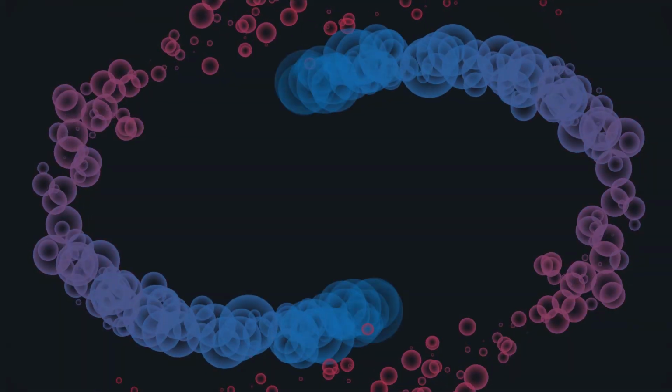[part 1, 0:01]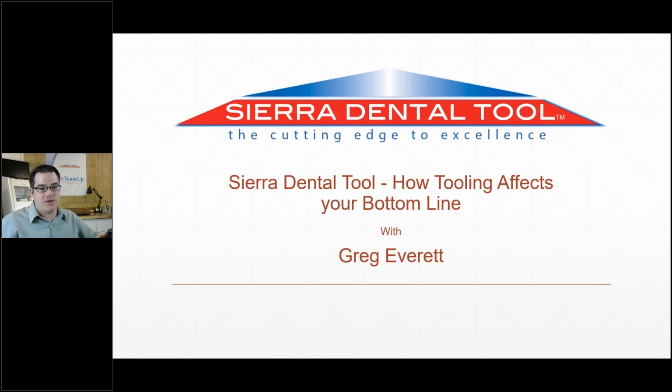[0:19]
My background is actually in the lab. I've got a lot of experience with a lot of different milling machines and CAD/CAM workflow in general. I like to tell people that I've had the chance to break a lot of things and learn the hard way. So I'm in a pretty unique position to speak about how tooling and CAD/CAM are related.
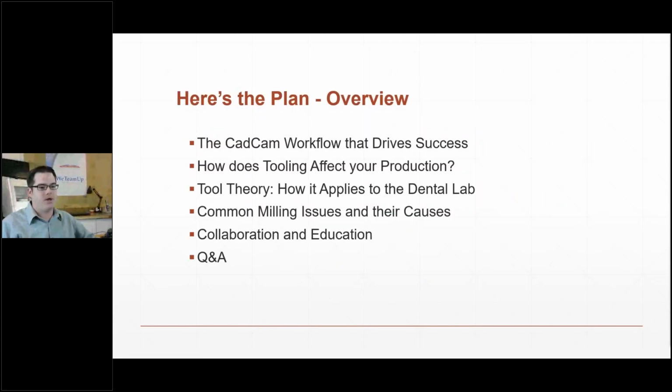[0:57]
So we'll just jump into it. I'm going to talk for maybe 40-ish minutes. I'm going to touch a little bit on how to think about CAD/CAM as a broad view, and then we'll dive deeper into tooling as more of a detailed look. And then finally, I'll look at some of the common milling issues that come up in CAD/CAM and how to look at them and determine what the issue may or may not be. And then we'll do a little bit of overview on what Sierra Dental Tool is doing in the industry. And we'll drive it home with a little bit of Q&A if there's anybody with questions at the end.
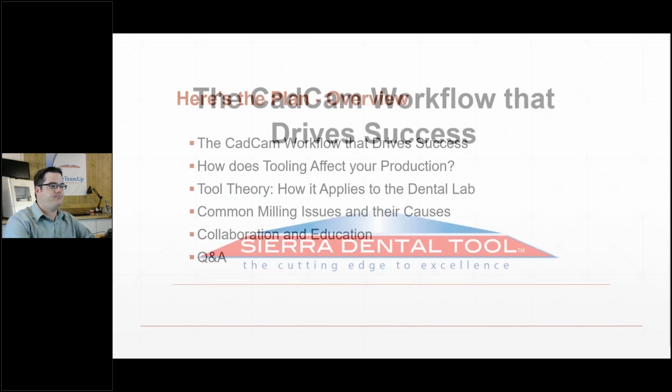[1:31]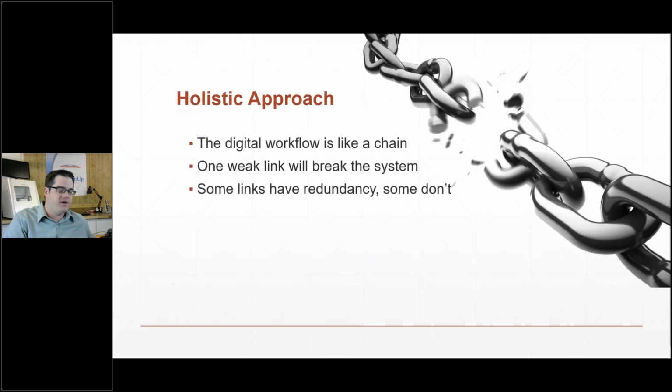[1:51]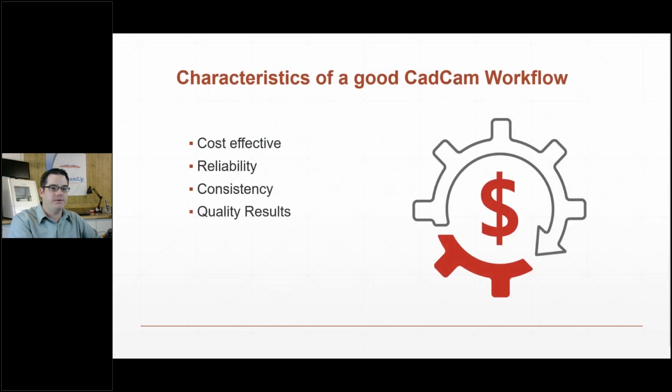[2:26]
So when we're talking about CAD/CAM, that's a broad term now. It basically means anything that's digital in nature, and most labs now have some sort of digital aspect to their production. And what I find is that a lot of times people tend to focus in on one point of the system, and you really should think about your CAD/CAM, your department or your process as one entity. It's an aggregate of several different pieces that all come together to make an efficient workflow. So the best comparison is to visualize it like a chain. One link breaks and you can have issues. So going forward,
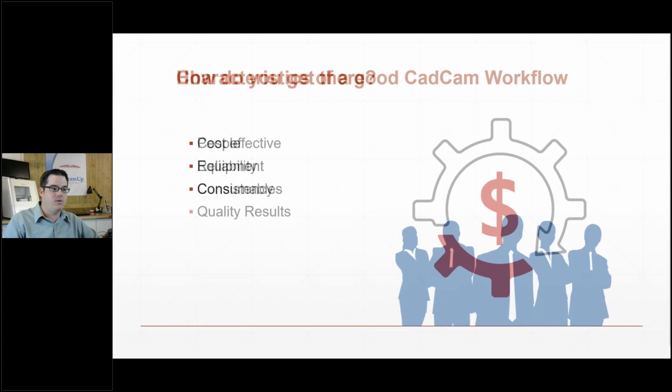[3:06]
what does a good CAD/CAM workflow look like? First of all, as much as it's fun to make crowns, we want to make money at it. So it's got to work for your application. A lab that's making hundreds of crowns a day is going to need different stuff than a lab making 10 crowns a day. So it's important to think about all that. And then you want it to be reliable. You don't want to be spending a lot of time on the phone with support, and you want consistent, quality results coming out.
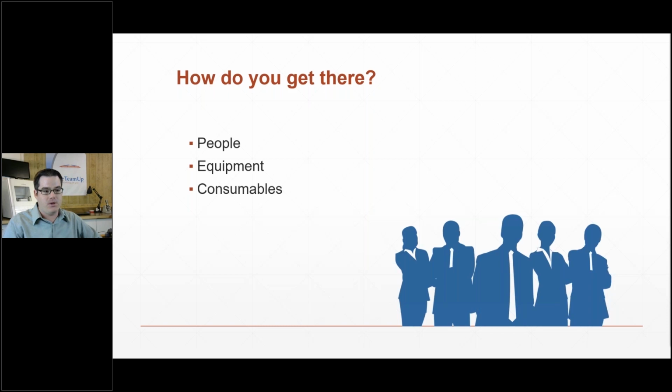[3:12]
So the key part of a successful CAD/CAM workflow is, first off, people and relationships, both internal inside the lab, employees, coworkers. Get good people who really want to put the biggest effort into the production, and then also externally. Choose your suppliers and build those relationships, because when the day comes that you do have an issue with your CAD/CAM, something breaks, a scanner breaks or whatever, which is inevitable, those relationships really come in handy. And then choose quality equipment. Ask around, ask your friends what they are using, and make sure you're using good, reliable, consistent consumables. That's material, that's tooling, obviously, all of the above.
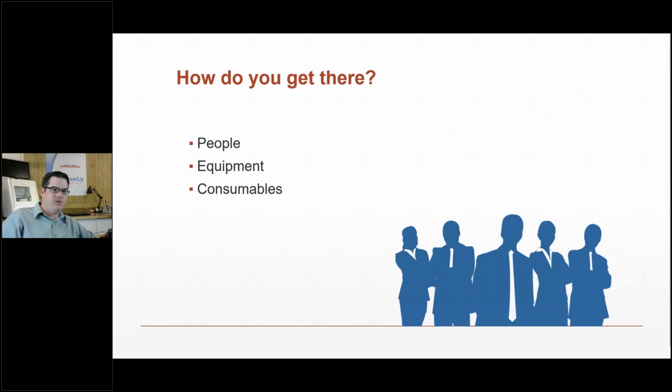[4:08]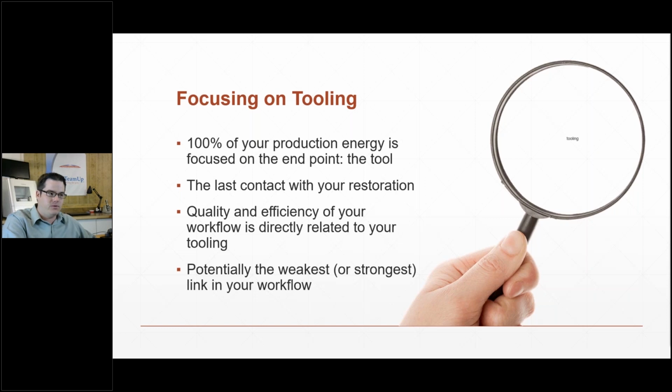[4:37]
So focusing in a little bit deeper on tooling, when we look at CAD/CAM and think about it like a chain, the tool is the end link of that chain. Everything's focused on it. All the way from your initial scanning, designing, nesting, it all culminates at that tool. And so if you do skimp on that when you're making selections, it can certainly give you bad results. It's the last thing that's in contact with your restoration before you actually get to put your touches on it. So it's potentially the strongest link in your system or the weakest link. And we like to encourage people to make it the strongest link.
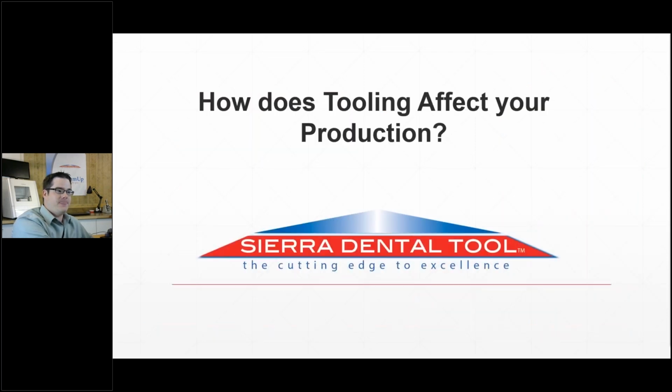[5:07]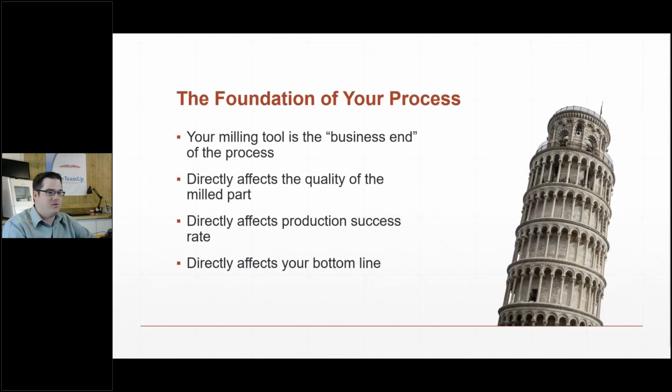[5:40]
Like I mentioned, often tooling gets overlooked as part of the production chain. A burr is not a burr. There are a lot of differences in burrs from manufacturer to manufacturer, and we take into account all of the detailed nuances that have to do with dental, and make sure that the product we're putting out there is a high quality product. So I like to think of the tool as literally the business end of your lab. Everything's focused on it again. It directly affects the quality of your units, and thereby also affects your bottom line at the end of the day. So I'll give you a little more detail on that.
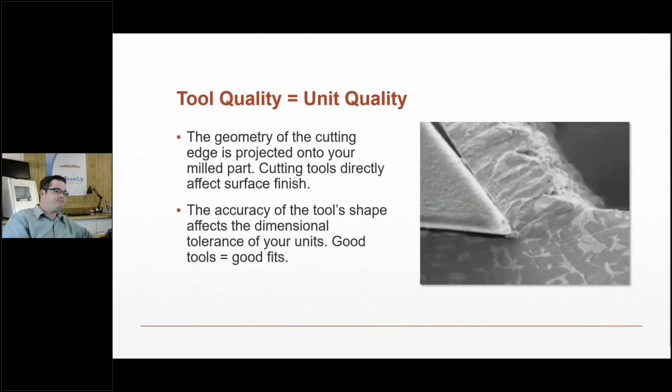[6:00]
So when a tool is cutting, and this is actually a cool GIF of a cutting edge cleaving material.
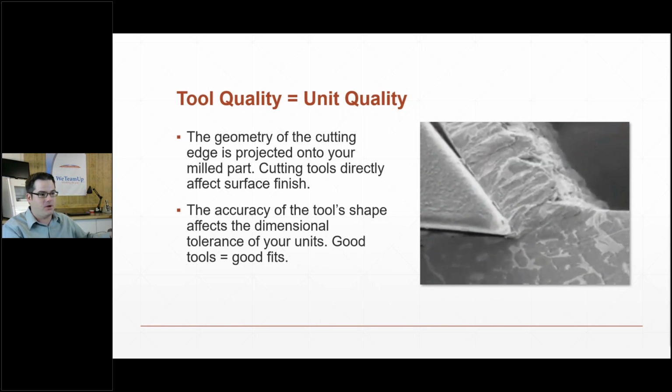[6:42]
This is actually aluminum, I believe, but the idea is the same in ceramic zirconia. The geometry and the shape and the tolerances that your tools are manufactured to, they imprint themselves right onto your part. So for instance, if your tool is a little bit oversized, then you can end up with loose fits. Or if it's undersized, you can end up with tight fits. And so it's important to know that you're choosing a supplier that not only puts out an accurate tool, but also puts out a product that's consistent.
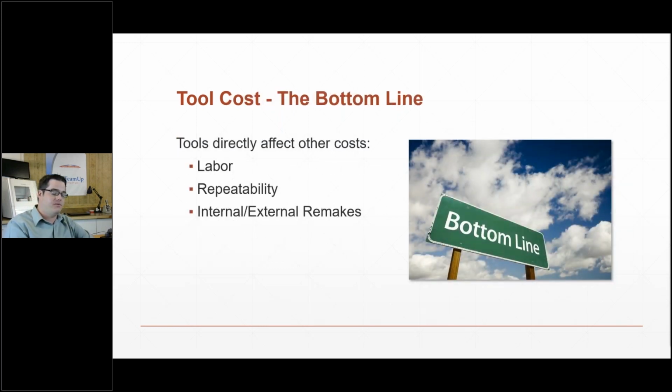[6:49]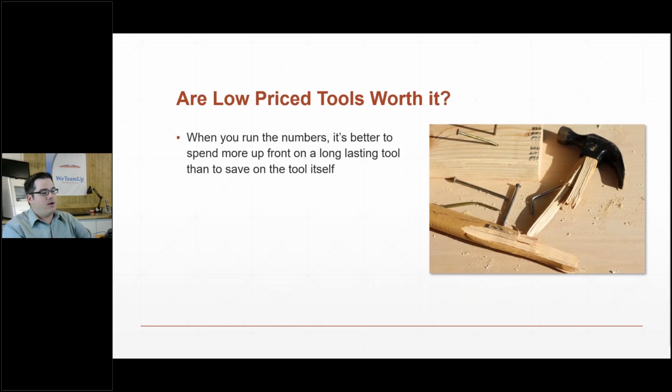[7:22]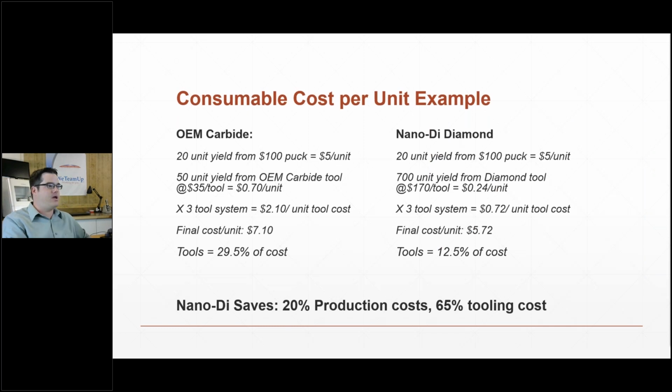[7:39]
And then the biggest thing we're concerned about in the lab, obviously, is cost. So this is a little breakdown on how tooling kind of works into your cost per unit. Not only does the actual tool cost come into play, but it also affects your labor rates and repeatability in the form of your remake rates, which is a very important metric in the lab, as we all know. So it's important to think about the quality of the tool and ask, is it worth it to pay less for a lesser tool? And I've got a little bit of a breakdown here
that we're looking at. And on the left, I've got a 20 unit yield out of a $100 puck, which, amazing, you can get a $100 puck nowadays, but they're out there. And you can see at the end that the tool with a 50 unit yield is a very significant portion of the cost at around 30%. Now, when you get into our Nano-Di, yes, it's a higher initial investment, but the drastically greater yield per tool that you get breaks down to a much less expensive milling cost. So you can see even with a $100 puck, we go from $7 to $5.70 on your cost per unit, which is really significant in terms of your business case.
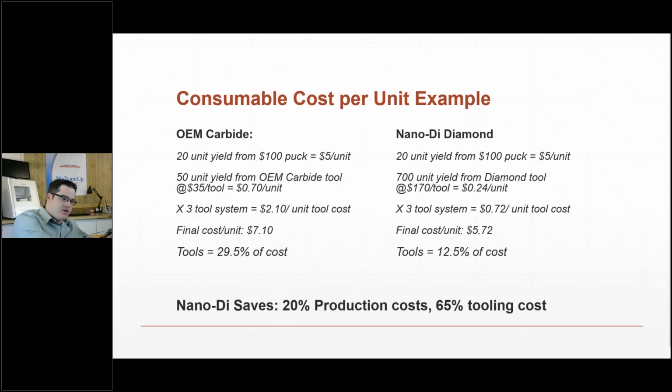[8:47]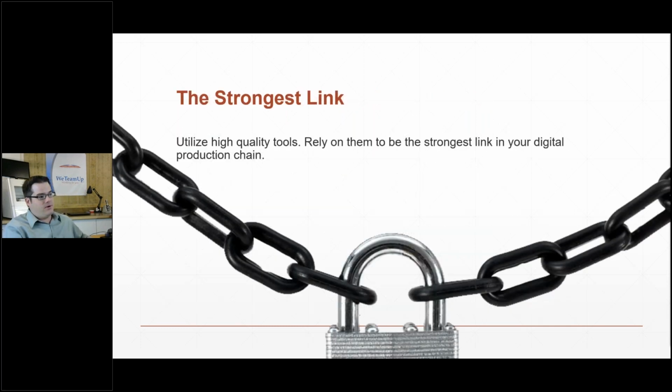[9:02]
And then if you want to look at it just at tooling, it's even more significant. But I like to throw the material in there so you can kind of equate that to a real life situation. So back to my chain metaphor. If you use high quality tools, they're going to be your friend. They're going to be the strongest link in your digital production chain. So moving on here,
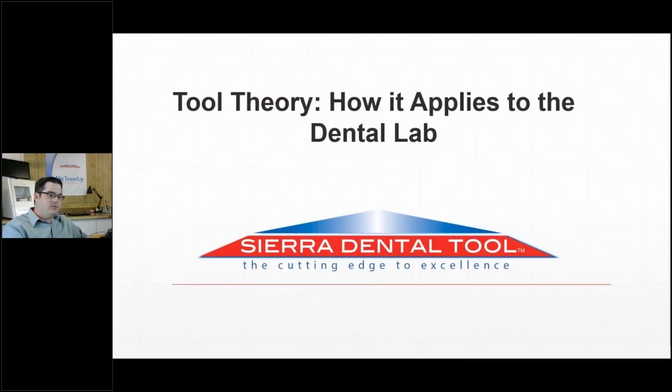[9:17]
as I'm sure everybody knows, we're not the only industry using a CAD/CAM system. In fact, dental is a very, very small niche in the whole scope of things. So the vast majority of CAD/CAM process is used on the industrial side. So that's automotive, aerospace, that sort of thing. Now a lot of the principles port over to dental, and so that's what I'm going to get into now.
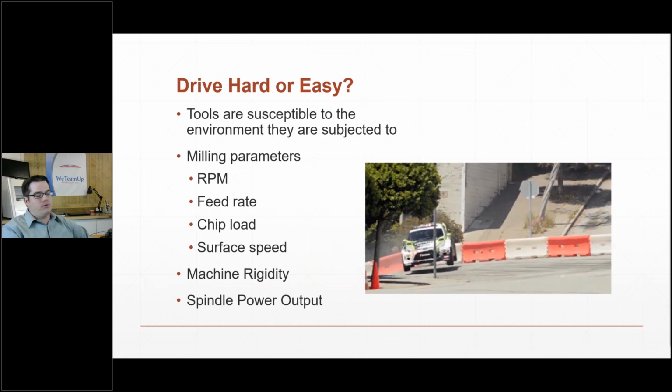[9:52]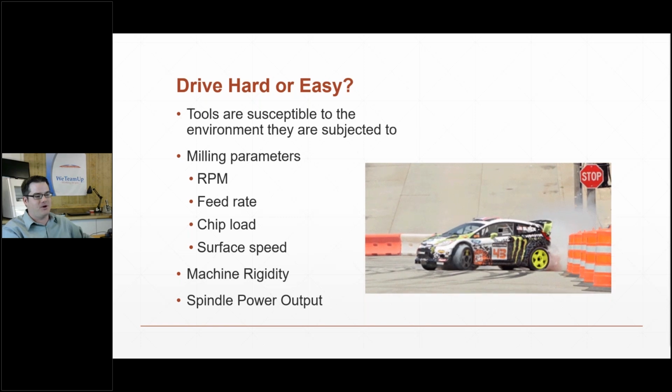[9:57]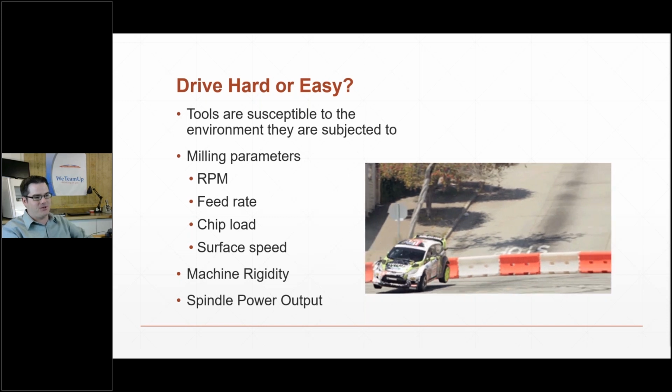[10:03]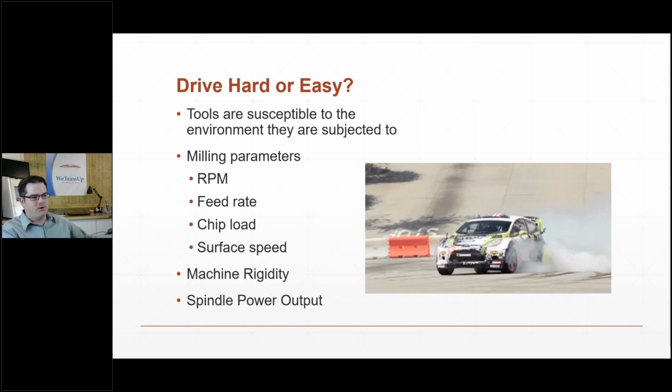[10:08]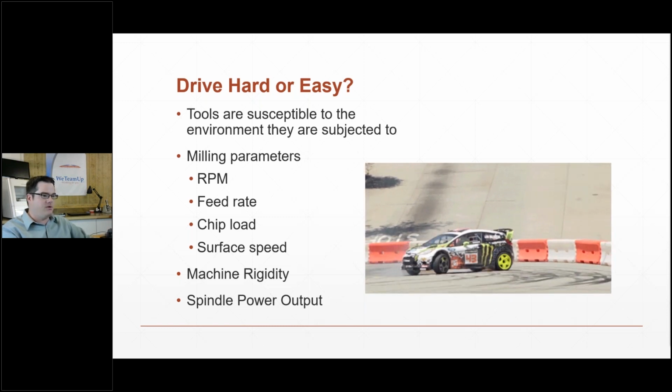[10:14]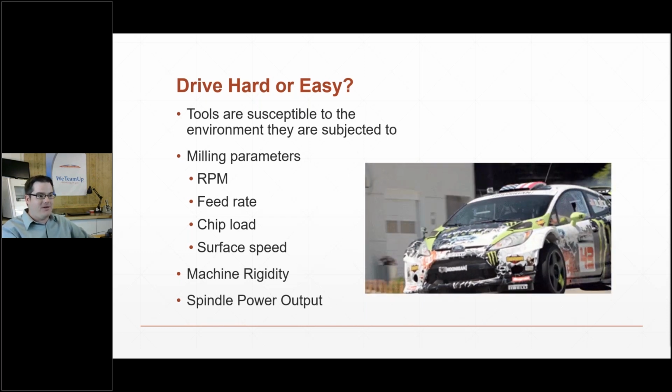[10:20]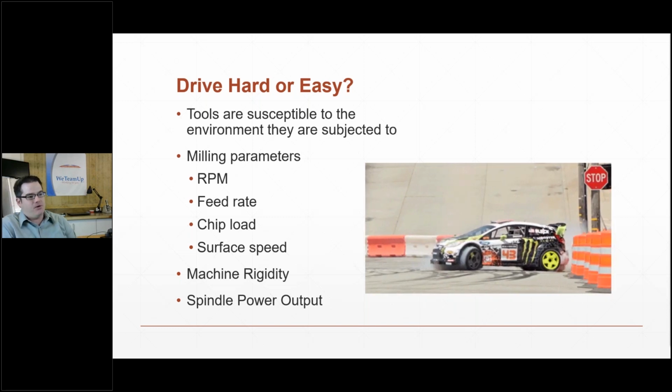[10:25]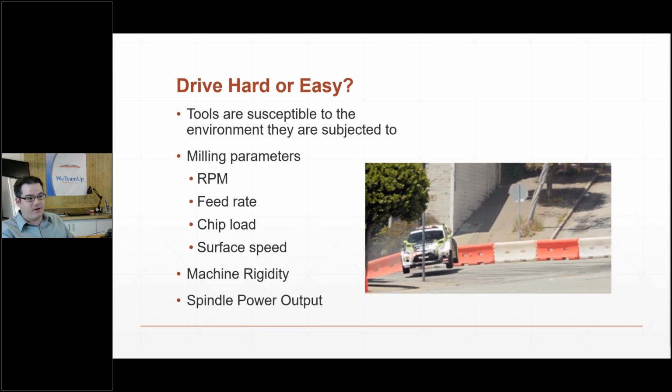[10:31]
So this is kind of an interesting little GIF. It's Ken Block, rally driver, doing one of the Gymkhanas. If you want a little distraction, Google Gymkhana. It's kind of fun. So tools are very similar to tires. If you think about tires, I'm going to buy a nice $80,000 Porsche and then put Walmart tires on it. No, you're not going to do that. The point being is that even the best tires, if you drive it like this, or if you abuse them, they're not going to last.
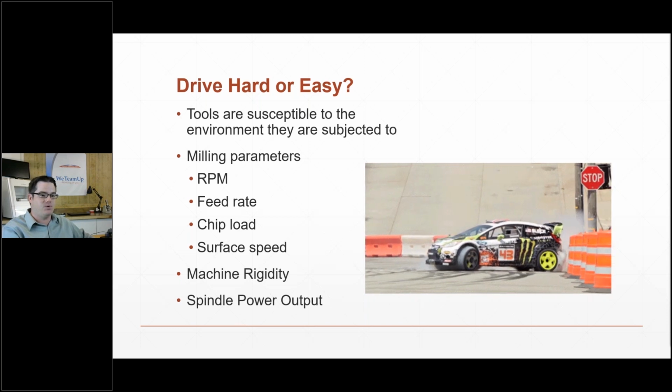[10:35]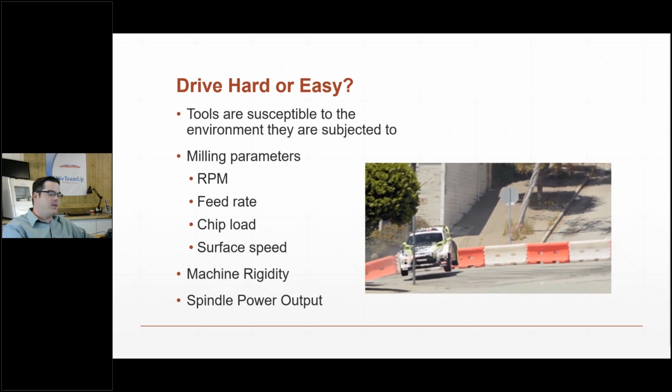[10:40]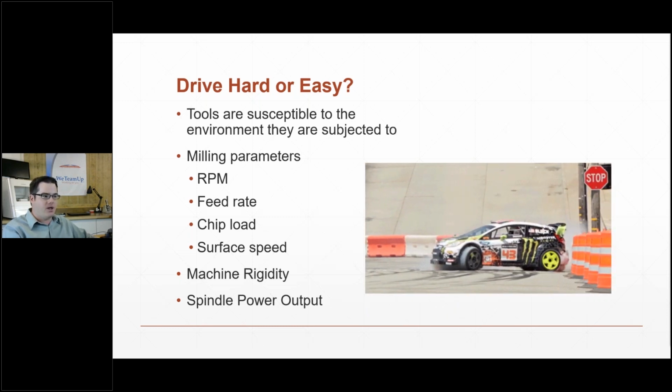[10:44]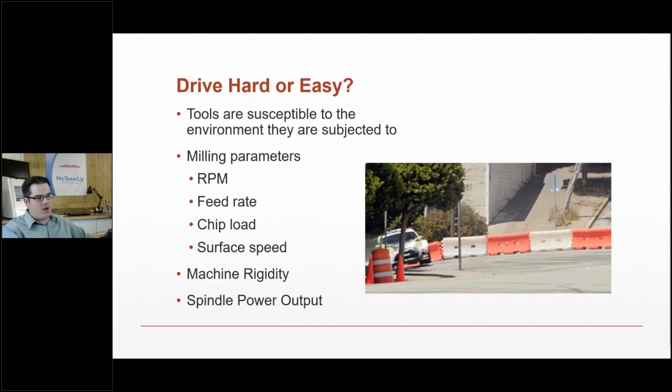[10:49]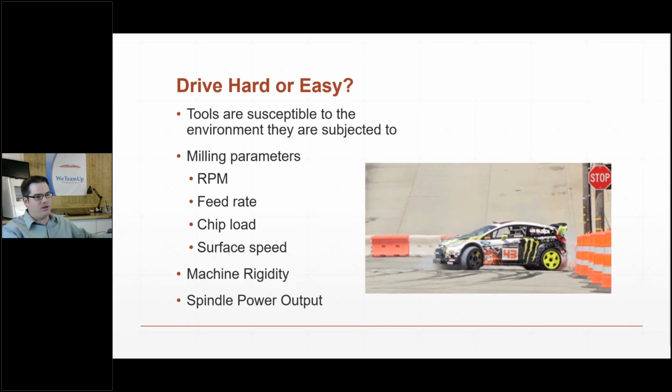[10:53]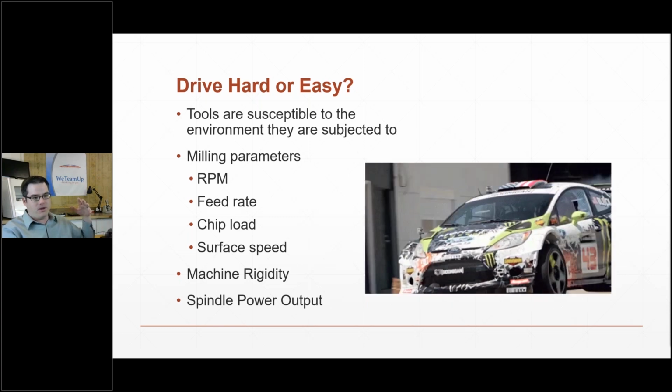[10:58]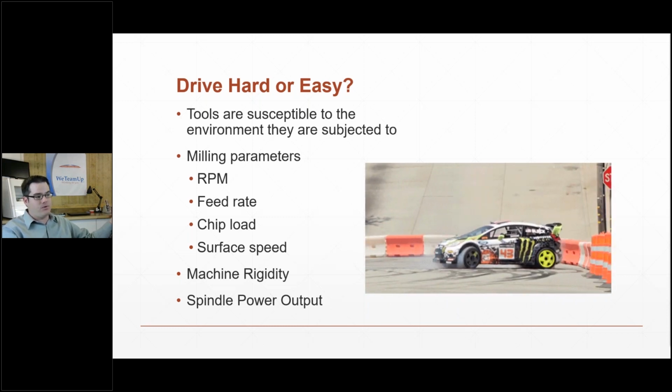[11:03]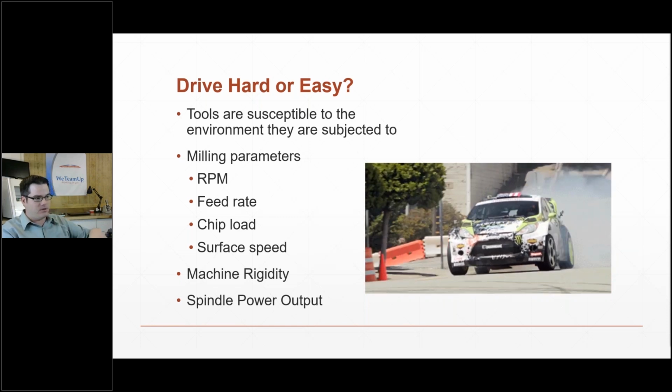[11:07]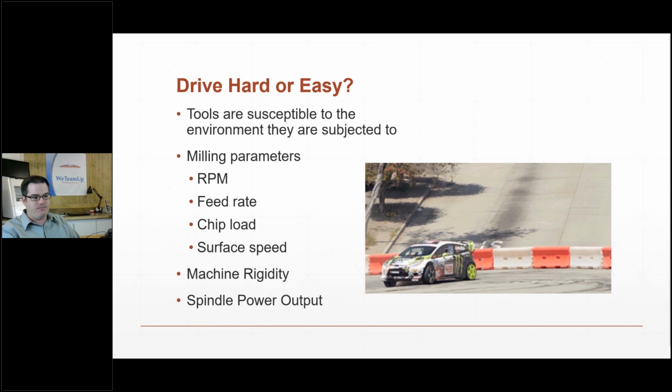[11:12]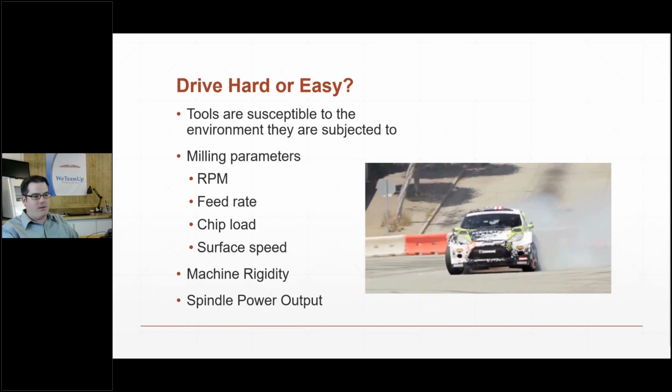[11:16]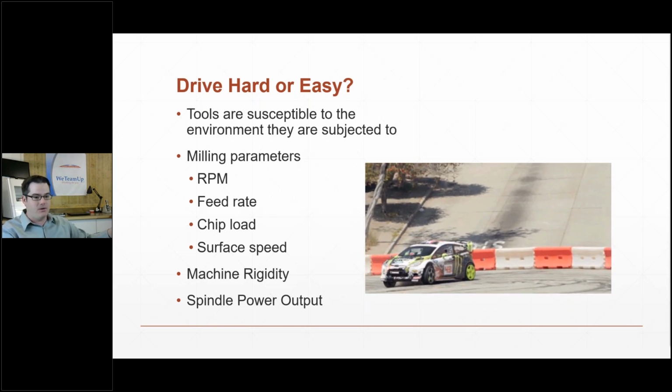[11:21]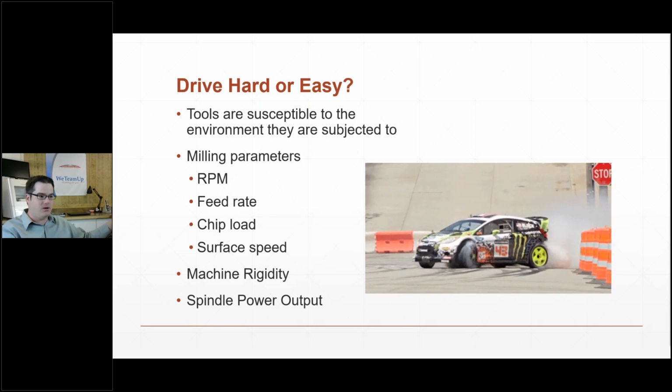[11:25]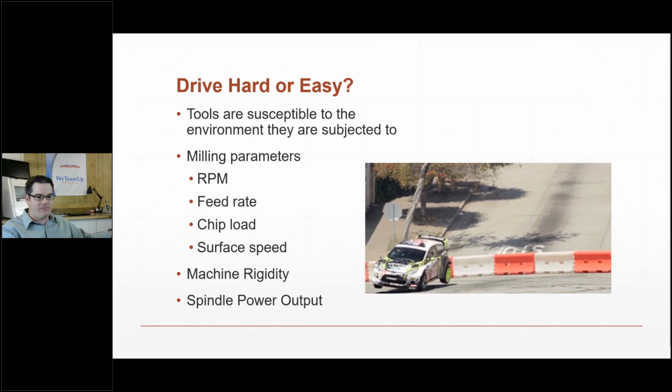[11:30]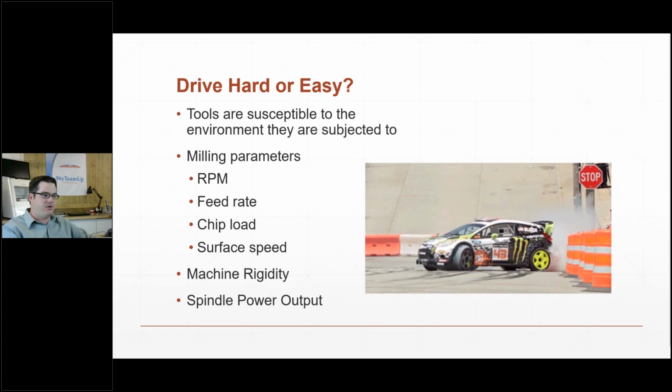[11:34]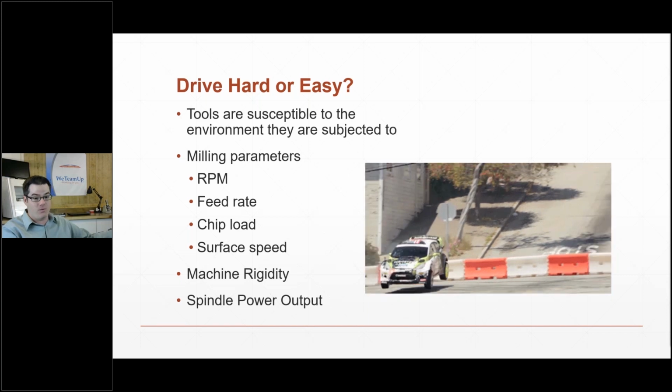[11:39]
So there are several different things that affect tooling and how long they last in situ. And the biggest thing is the milling parameters: RPM, feed rate, chip load, and surface speed. RPM is the rate that it's spinning at. Your feed rate is the speed that the tool is moving through the material horizontally, and those two are combined to determine a chip load, which is the thickness of the piece of material that's cut per revolution. And all of these come together and they affect the entire milling dynamic. If you change one, you change the other, and certain materials, certain machines, they all have their own little sweet spots. So if they're overdone or underdone, it can drastically affect tool life one way or the other.
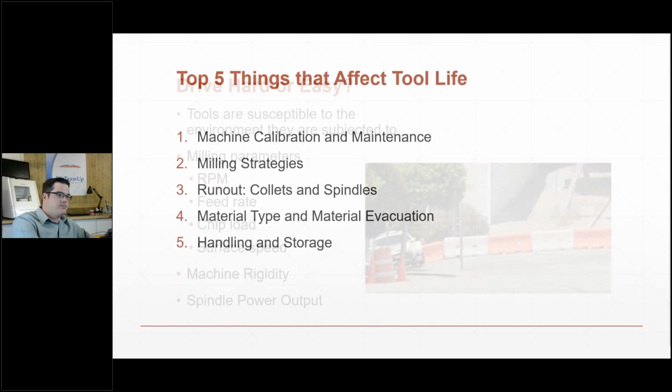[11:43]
Okay, a little bit more detail. Unfortunately, the milling strategy controls a lot of those parameters. The only thing I can say about that is don't mess with that stuff. Messing with milling strategies is not really recommended unless you have a really good grasp on what's going on. So, top 5 things that affect tool life, and there are others, but I don't want to bore you guys to death.
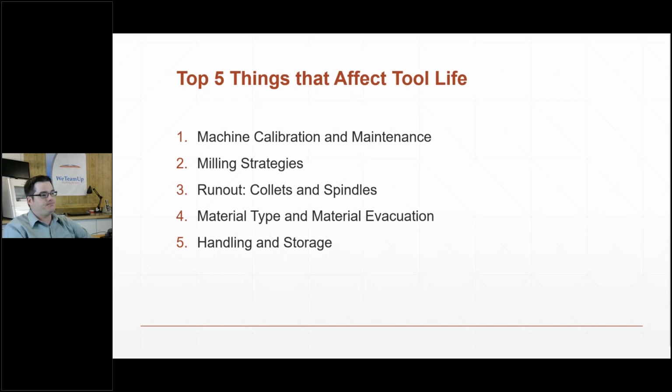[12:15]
First is going to be your machine calibration and maintenance. So no matter what machine you're running, definitely calibrate it. Always keep up with the recommended maintenance schedule. It's easy to forget about that stuff because we're trying to get units out the door, and if the machine's dusty or something, who cares, right? But it's a huge investment for the lab, so definitely if you don't have a system in place, have some sort of standard operating procedure for calibration and maintenance.
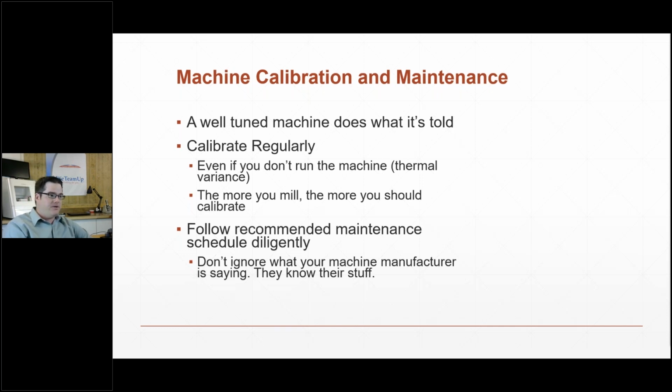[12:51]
A little word on calibration: rule of thumb is the more units you make, the more you need to calibrate. And then also you want to be aware of the ambient temperature swing in your lab. A 10-degree Fahrenheit temperature swing can change the shape of your machine enough to throw a calibration off. So if you're not very precisely temperature controlled, then I'd recommend a daily, like morning calibration.
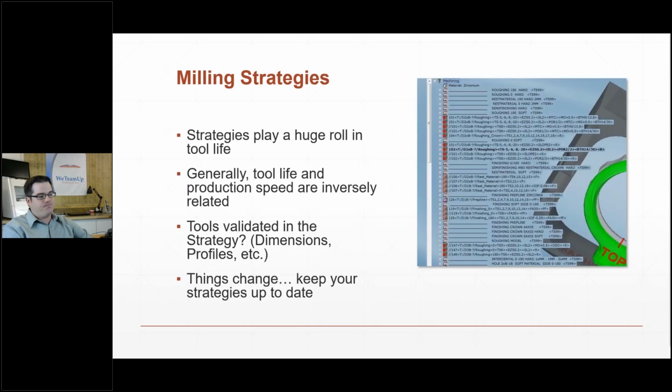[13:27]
A little bit more on milling strategies. The milling strategy is what controls all those other parameters that I was talking about. And as an end user, you don't have a whole lot of control over it, but that's where it comes back down to who you partner with as far as support goes, because different companies look at this differently, and you want to make sure you're getting something that's validated with the tooling, with the machine, and the material that you're using.
And then the last point on strategies is, don't neglect your updates, because they're constantly putting out new strategies, things they're improving, milling times, efficiencies. It's important to keep up on that. So a lot of the CAM softwares have like an annual fee. It's usually pretty negligible, and in our opinion, it's certainly worth it.
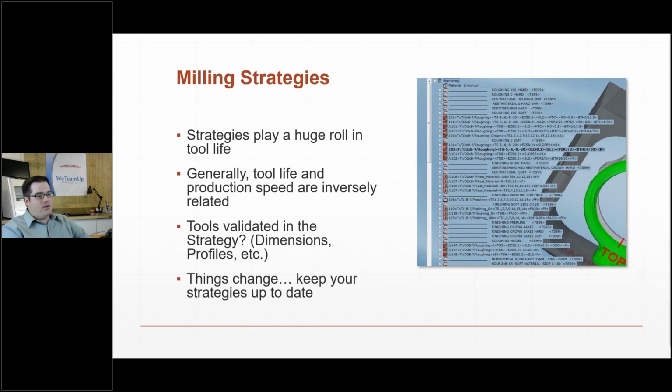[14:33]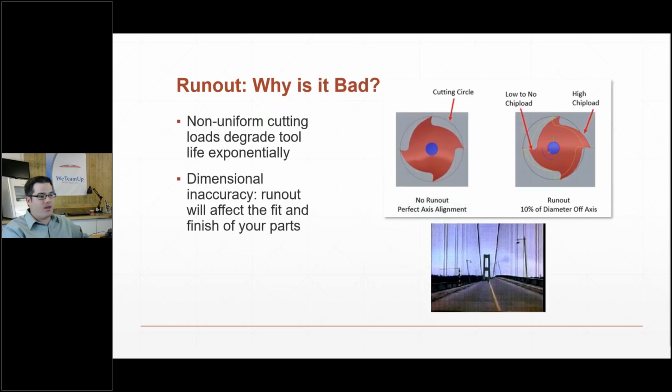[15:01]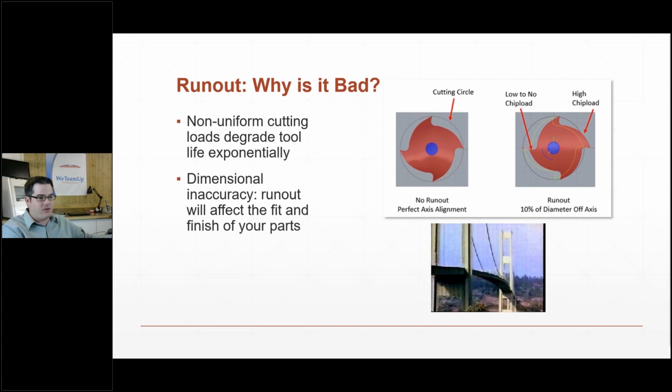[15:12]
So here's another one that we kind of have a little bit of control over in the lab, and that's runout. If you imagine a tool spinning, that tool must spin in alignment with the spindle's axis. And any deviation from that alignment is called runout. So if there's any vibration or wobble in the tool, what you get is a differentially loaded cutting dynamic. So one flute is doing more work than the other. And an imbalance in any system is bad.
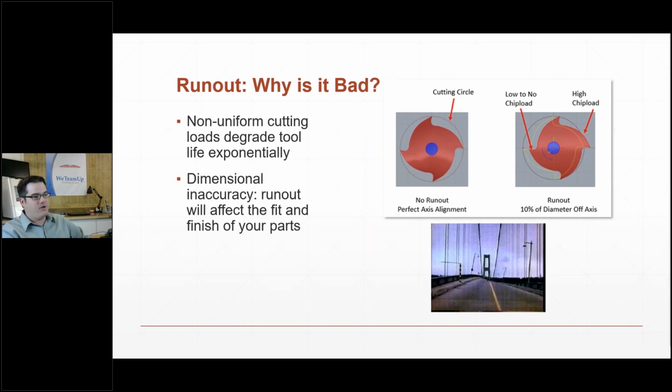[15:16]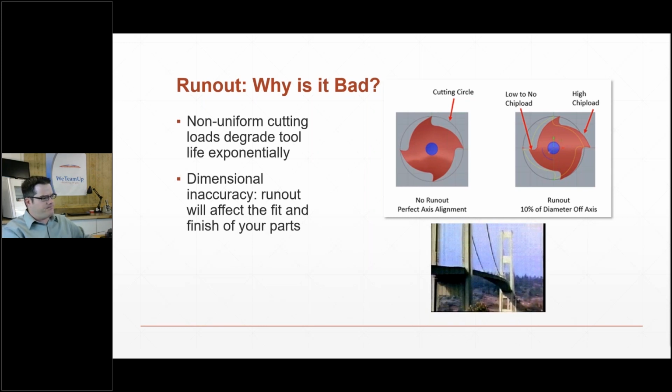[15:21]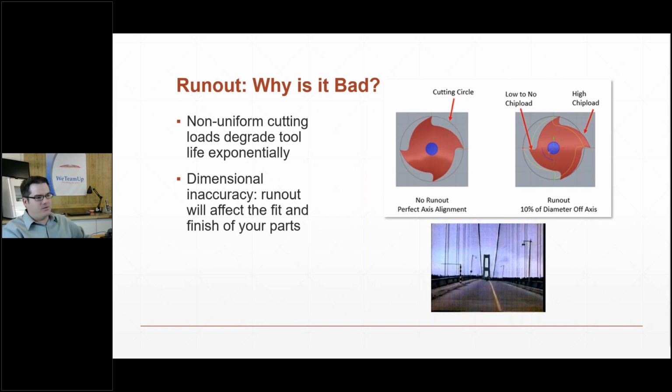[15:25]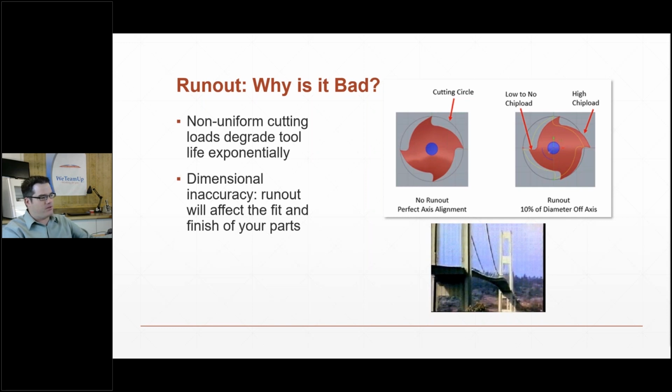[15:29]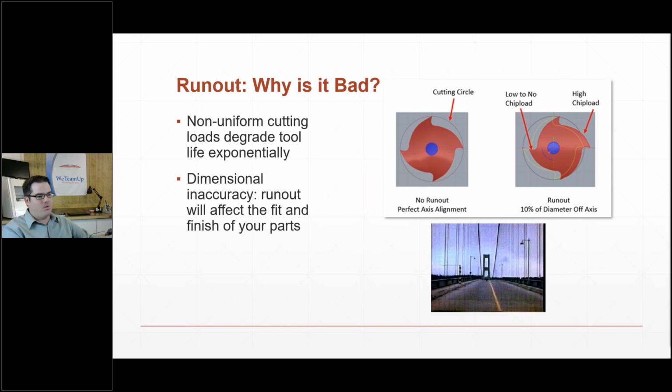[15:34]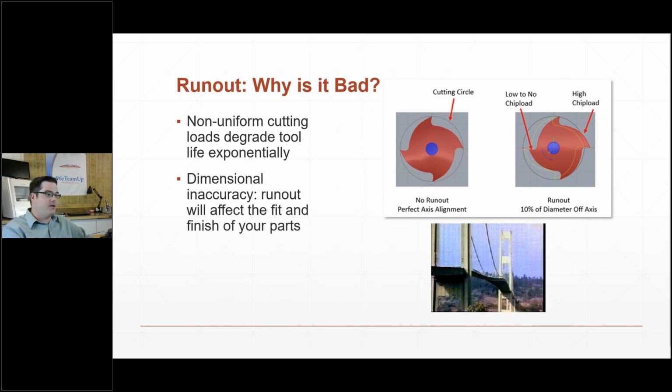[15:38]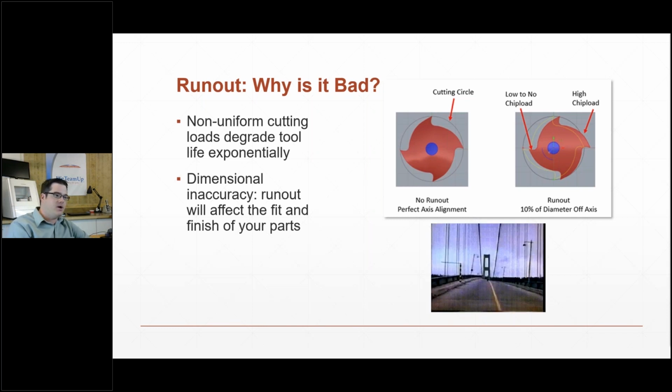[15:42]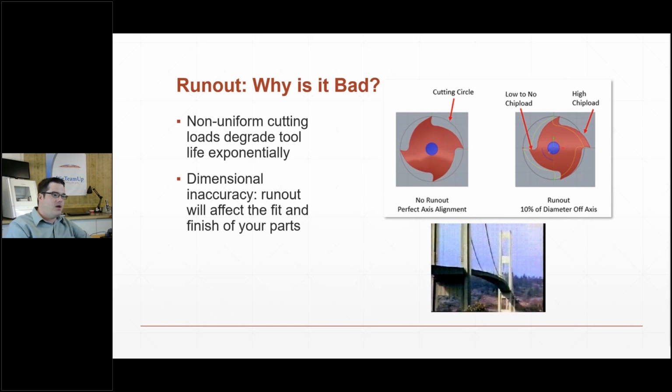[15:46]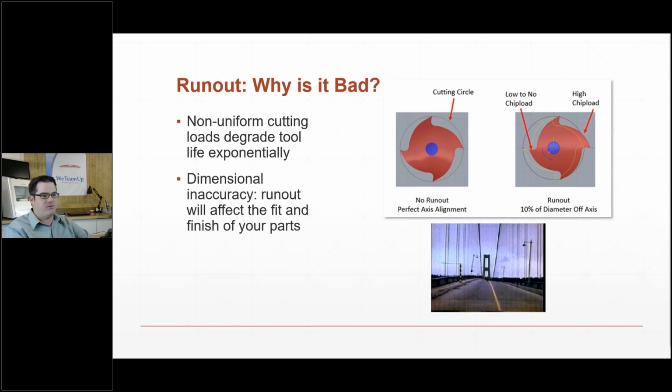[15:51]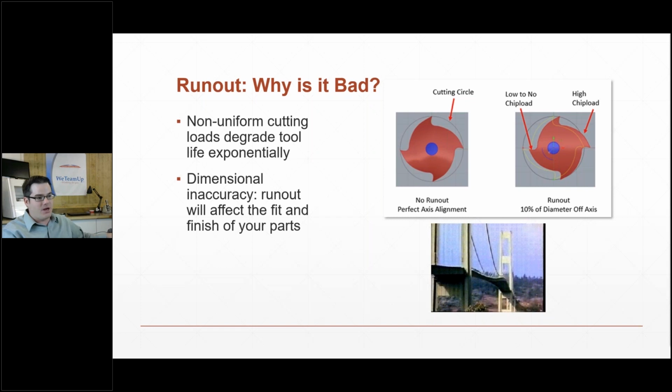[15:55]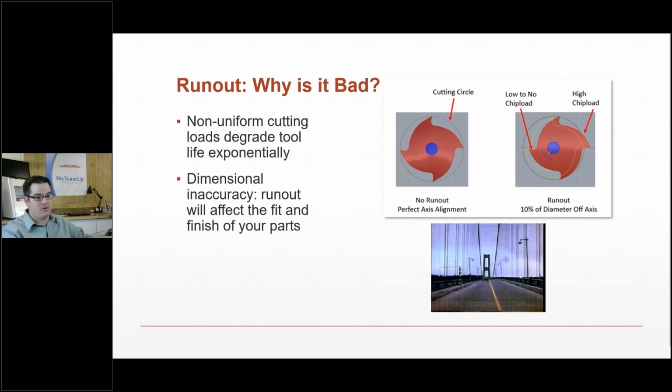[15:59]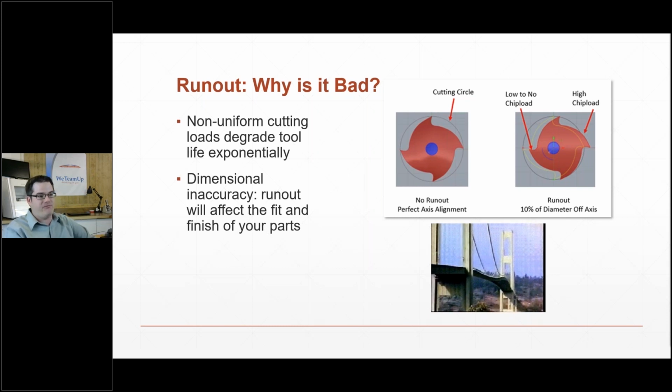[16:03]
A really good example of that is this little GIF here. This is the Tacoma Narrows Bridge that was built, I think, in the late 40s, and they didn't take into account the wind load. And so what happened is that when it got windy, this thing started to resonate and it collapsed. So differential loading in any sort of mechanical system is bad, especially in tooling. And so here's what we get here. You get a non-uniform cutting load, like I said, and if you do have a severe amount of runout, like say that it's moving 50 microns, then your tool's actually going to cut a path that's 100 microns larger than the tool because it's wobbly. So then you can get dimensional inaccuracy and fit issues.
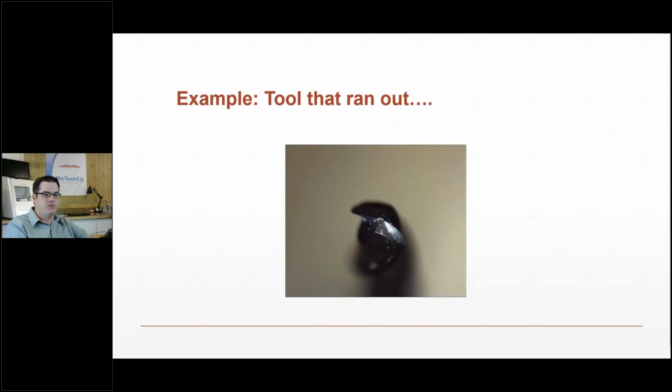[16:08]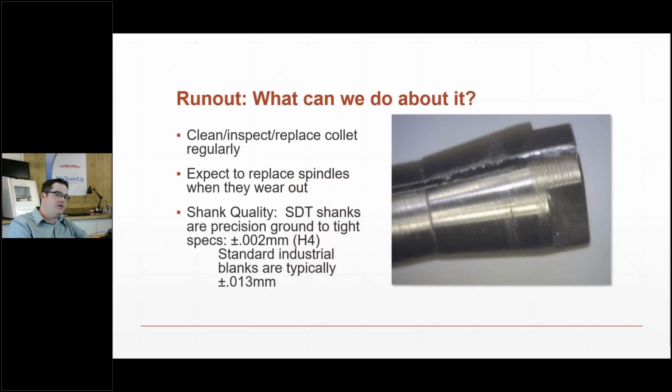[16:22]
This is a picture of a tool that was running out, and you can see that one flute is severely worn versus the other one, which is still pristine. So how do you control runout? The biggest thing in the lab is your collet. Manufacturers have different protocols for managing the collet, but they all do have protocols. The collet's a wear item. It's solely responsible for centering the tool along that spindle's axis, and it's only able to do a certain number of cycles, so they do wear out.
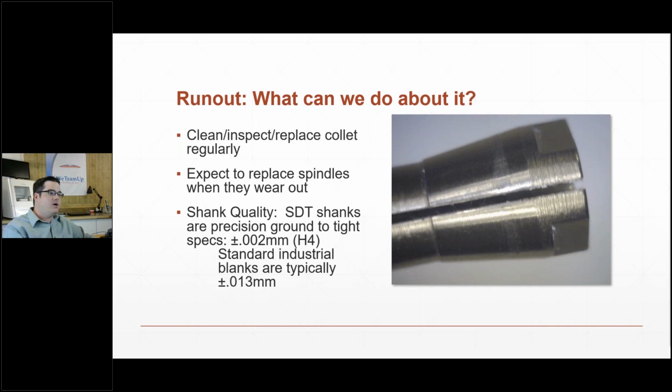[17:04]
This tool here, you can see there's some wear facets on this tapered portion of the tool, and this one is ready to go. So keep them clean, keep them inspected, and if you happen to have an issue where you're suddenly burning up tools, or you've got fit issues or chipping issues that you just can't explain, the first thing to look at is the collet. I'm always fairly surprised when I run into labs that don't maintain the collet.
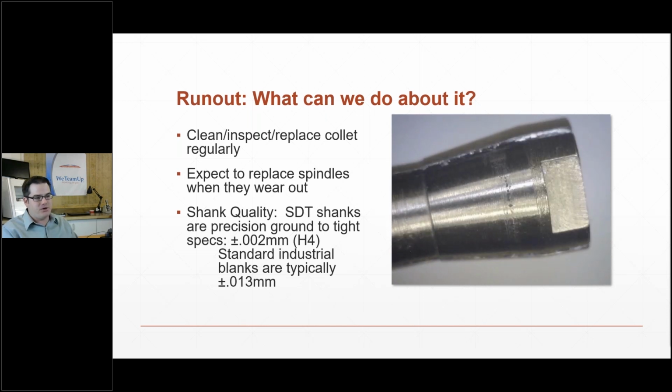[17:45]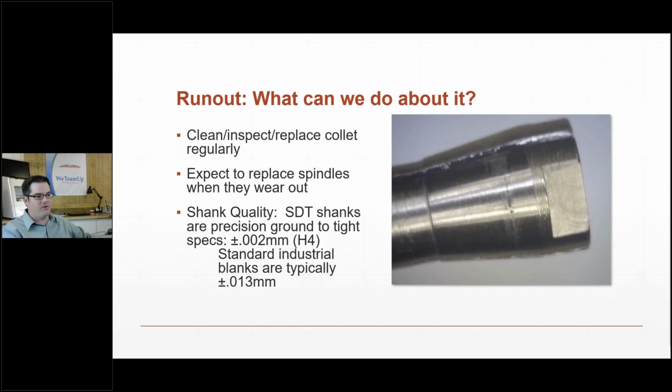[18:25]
And then another thing that we can do about runout comes down to tooling quality again. If you imagine real quick a burr, you have the cutting edge of the burr, and it needs to be machined perfectly concentric to the shank of the burr. There's a lot of different manufacturing methods you can use to machine a tool, and some of the cheaper methods are not good at maintaining that concentricity. So cheaper burrs can actually have runout built into them, which you can't do anything about. So it's important to select something that's ground precisely. Sierra tools are ground to a very, very, very tight tolerance.
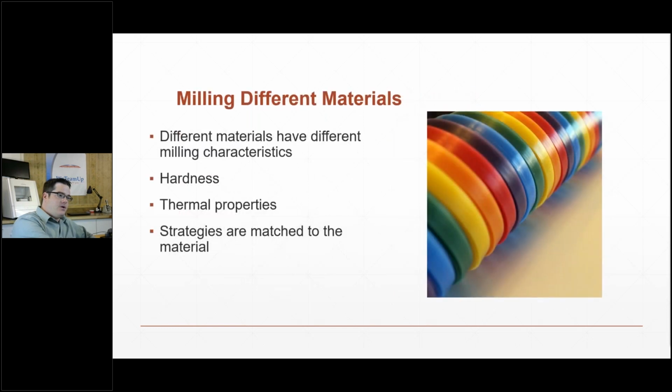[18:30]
And then another thing as far as materials is you have to make sure you're considering the material you're cutting. If you're cutting wax, you're pretty much never going to wear a tool, versus cutting titanium, that's going to be really hard on tools. And so the thing as a lab that you need to be aware of is that the strategies need to be matched to the material and the tool. I think some strategies have soft and hard wax options or PMMA, and so just be aware of that when you're selecting your milling parameters.
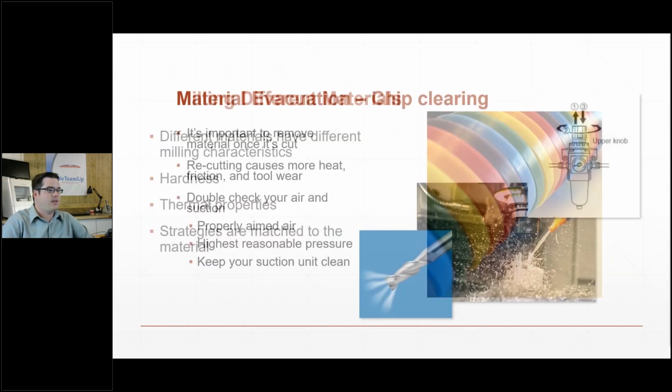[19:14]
And next here, material evacuation. It's pretty common to see either underfed compressed air into a machine, like the regulators turned down too low, or a clogged vacuum system. But what happens with tooling is when it cuts, you inevitably make some debris, right? So that debris, you want to get out of that area as quick as possible, because otherwise the tool will actually recut that material, which is not doing any work for you at this point.
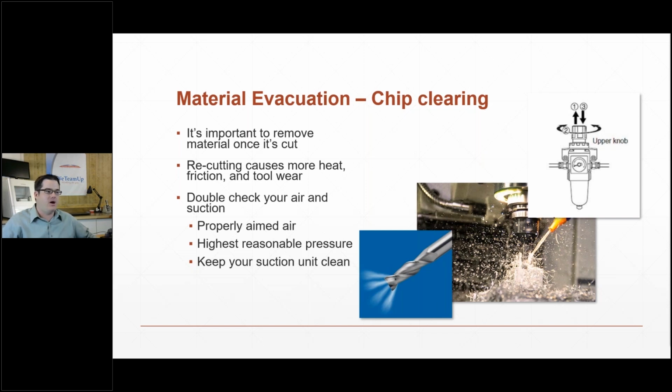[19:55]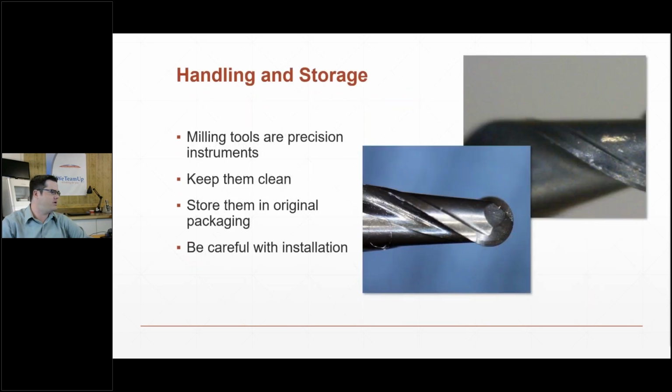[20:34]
It's just waste, and it creates another abrasion point in another area for you to get a heat buildup at the tool's tip. So definitely make sure your air is properly aimed. For those of you who have machines that are aimable, it should be aimed at the tool's tip. Run the highest reasonable air pressure. Certainly don't do anything outside of what your manufacturer recommends, and then keep your suction unit very clean. And you're going to have the best that's possible on that.
And I think this is the last point on tool life, and that's actually just handling the tool. Milling tools are precision instruments, and they're made out of tungsten carbide, which is a very, very hard material. But because it's an engineered device, it's designed to take a mechanical load in a certain direction. And the tungsten carbide, because it's machined to a sharp cutting edge, if it's traumatized in any way that it's not designed to be, it can chip and it can have defects. And if you introduce a defect into the cutting edge of your tool, one way or the other, you'll significantly cut down on the life of that tool.
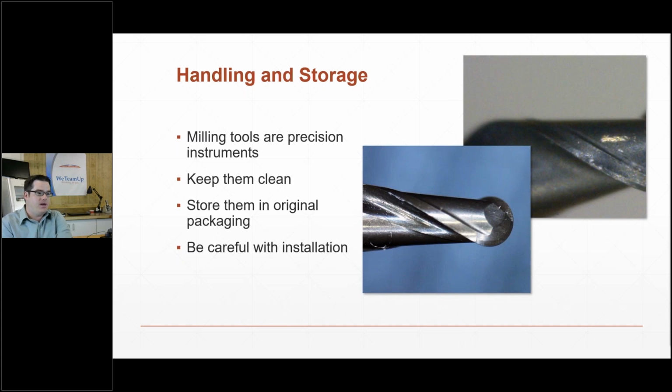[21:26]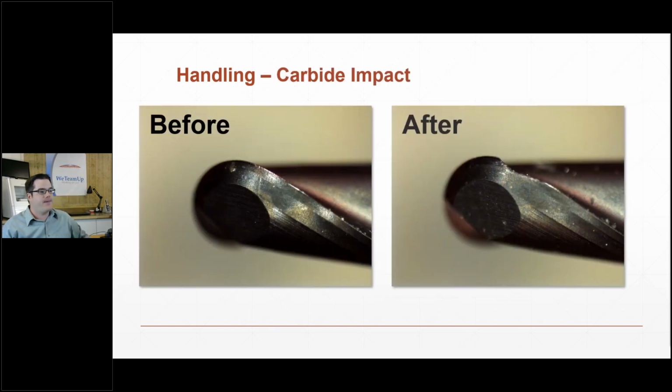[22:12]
So we recommend keeping them clean, and if you're going to take it out of the machine and store it, put it back in its original packaging. And then one of the biggest things that we see is damage during installation of the tool. So when you're putting the tool in your machine, be very aware of where the tip of it is, and make sure you don't crash it into any little pieces of metal or the tool holder or whatever. In fact, you can see in this picture up here in the upper right, this is actually some brass that was on a tool that we inspected, and that's a telltale sign that we were impacting the tool holder on installation.
So this next slide here, this is the same tool that was just dropped on the floor, essentially, and you can see the significant damage to the cutting edge. Now, instead of cutting with a nice pristine sharp edge, now I'm cutting with a blunt edge, and it doesn't really take much to imagine how that can affect the overall yield from the tool.
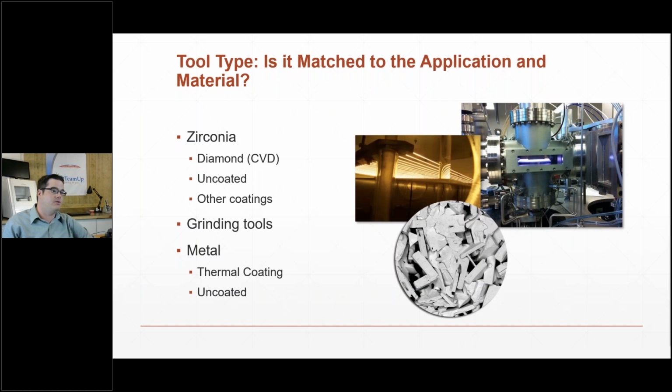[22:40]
A little bit about material and tool type. We're milling zirconia. You're going to have uncoated at the bottom of the spectrum as far as yield, and then there are some other coatings out there that are available. They're kind of like a mid-range yield coating. And then at the top we've got diamond, and a little bit on diamond. There's a lot of, I guess, misinformation out there about diamond.
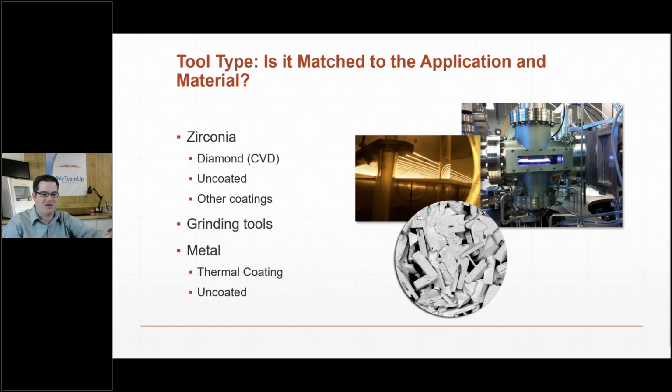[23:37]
You can call a diamond-like coating a diamond coating, but the word you're really looking for is CVD, which stands for chemical vapor deposition, and that's a process where we actually grow a real crystalline diamond. It's a nanocrystalline diamond directly on the tool, and that's done in some really highly space-age precise equipment, and it's really the only way to get a real diamond coating on carbide. And then if you really want to get into the nuances, there are differences in the CVD coatings, but if you want to know about that, we can talk about it offline. That's another half an hour conversation.
And then grinding tools, if you're doing lithium disilicate, Emax, etc., that's going to be a plated grinding tool. And if you're milling metal, you'll see uncoated and coated tools. The biggest thing with milling metal is that you want to manage heat, and so our line of metal tools are very good at that. And some of the same things come into account with metal tools. You want everything to be very accurate, especially when you're dealing with implant-based restorations.
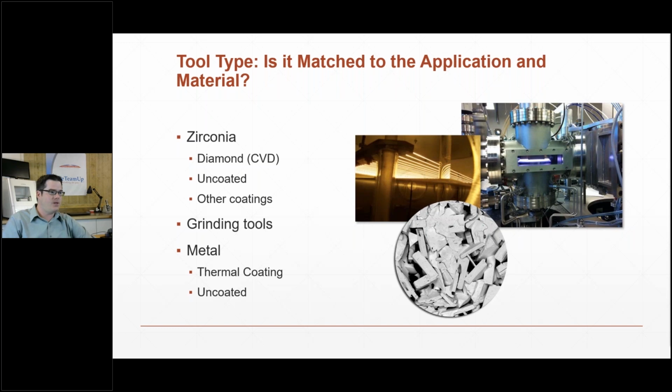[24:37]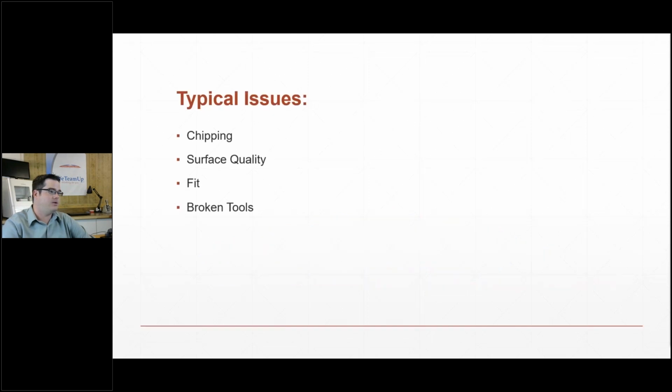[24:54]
Alrighty here, so I'm going to try not to run long here. So some of the issues with milling that come up, which I'm sure we've all experienced. We'll go through this kind of quick. So generally you'll see chipping. That's probably the biggest thing.
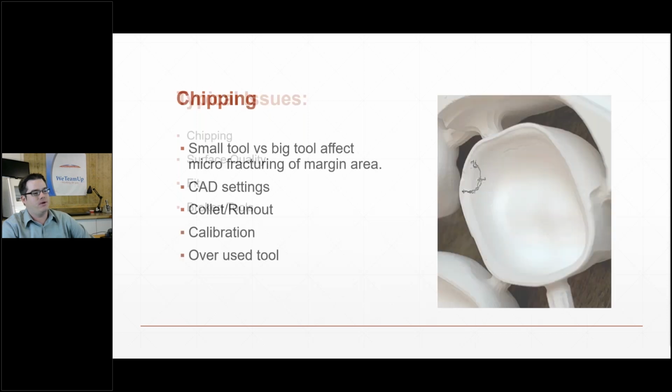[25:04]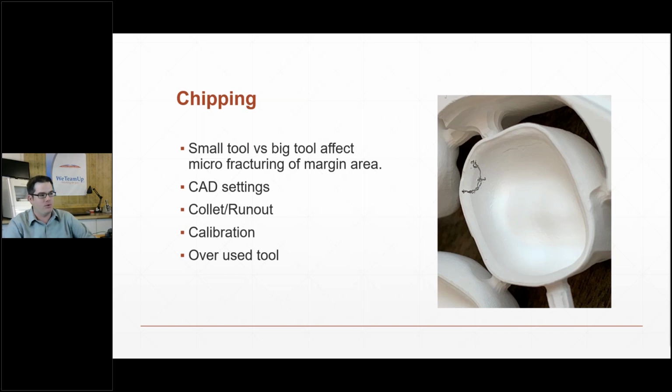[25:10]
Surface quality and fit, and then broken tools. So chipping. Your main causes of chipping are most likely going to be: make sure your CAD settings are right, make sure your margin offset is correct, collet run out, calibration and condition of the machine.
And then another little side point here: when you're milling and getting chipping, a lot of people think that it's the 1 millimeter tool, and yes, the 1 millimeter tool can cause chipping, but you also want to make sure you're looking at your 2 millimeter tool. Because if you're milling with a worn 2 millimeter roughing tool and a brand new 1 millimeter tool, you can still chip, because that tool is actually traumatizing the material as it's cutting. So keep that in mind. And then obviously, if you're using a tool that's very, very worn, you're going to introduce chipping at that point.
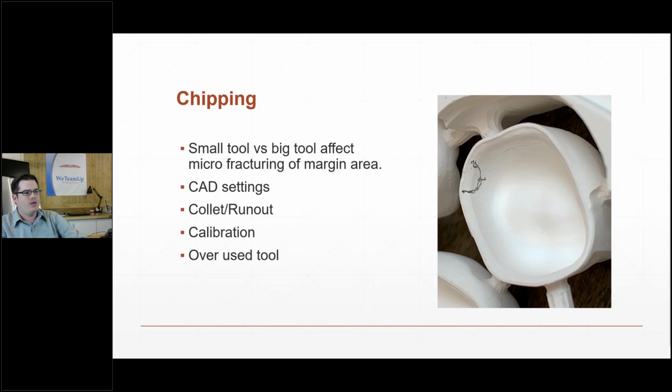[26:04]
Surface quality. One of the biggest things that comes up that I see is lines or misalignment of top and bottom half. And 99% of the time, if you get a surface issue like that, it's a calibration or mechanical issue, especially those parting lines, like in that bridge at the top there. And what that is, when the puck gets flipped, it's not aligned perfectly in either an X or Y direction, and so you get an offset.
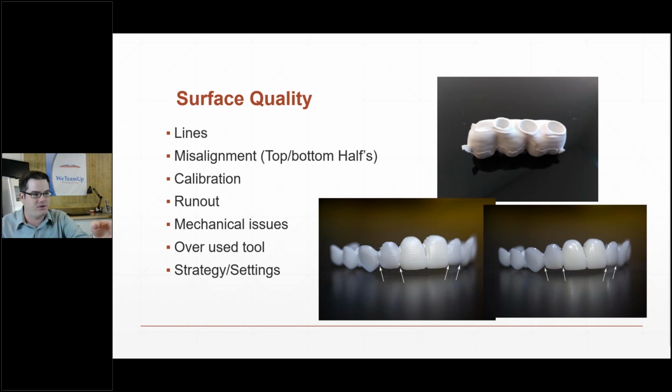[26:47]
If you ever have a machine that's doing that, pay attention to the direction of the offset, which axis it'll be aligned to, one way or the other. And if you can tell your support team that, that'll help them zero in on what to make an adjustment on. And then obviously, you've got overused tools. That's going to be a through line. If you're running a worn tool, you can have surface quality issues.
And then this is a little bit of a, I don't know, humble brag, I guess. This PMMA bridge was milled with the exact same mill, the exact same tools, and everything, but it was just strategy adjustments that changed this surface quality, which was exciting, to go from something rough to something almost usable right off the machine. So parameters matter.
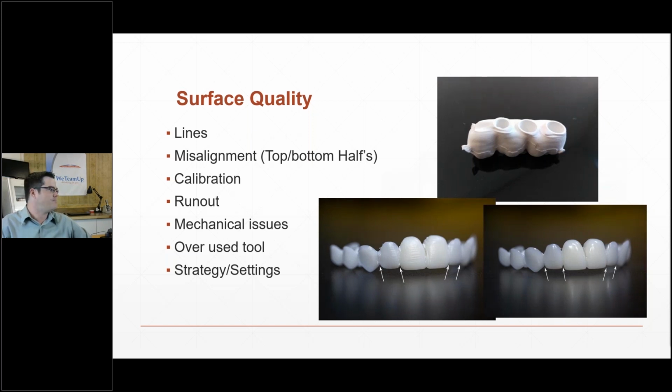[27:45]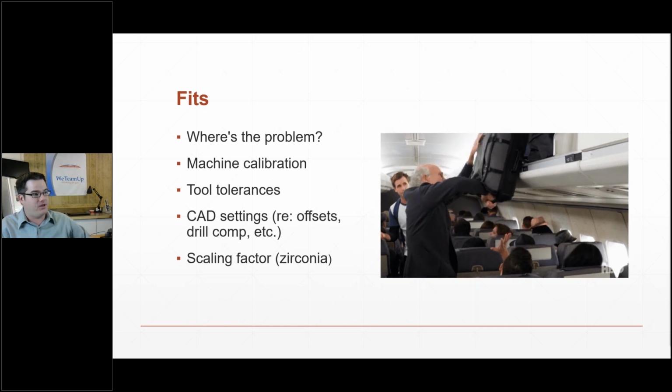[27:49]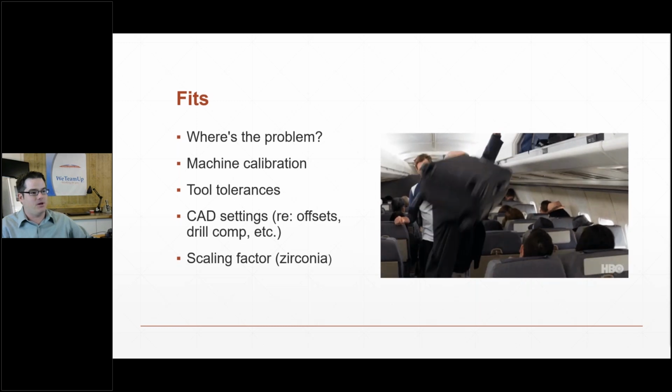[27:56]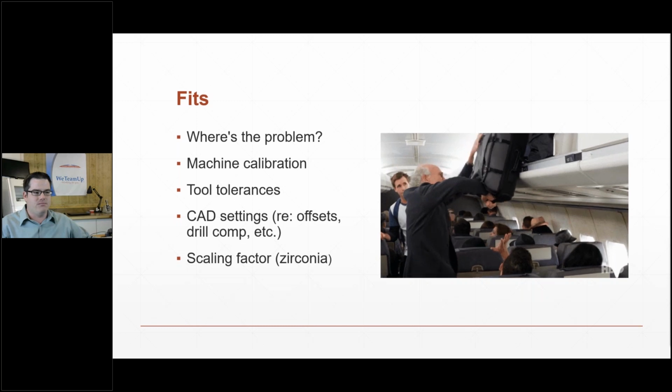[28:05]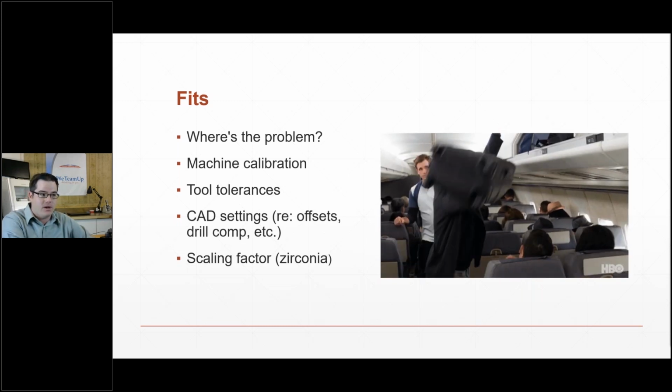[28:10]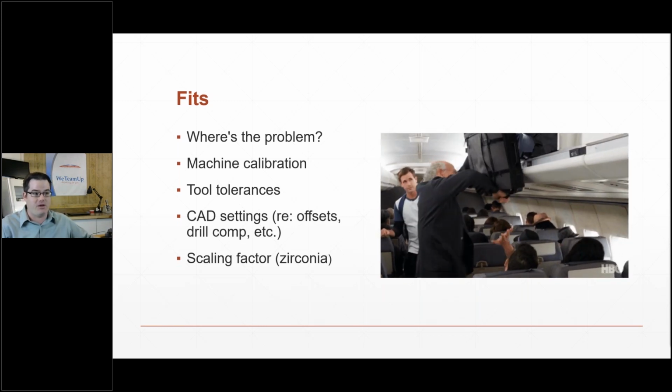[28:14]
And fits. My biggest tip on fits is think about where the fit issue is, and that's going to help you zero in on what's going on. So, for instance, I have a crown that's got tight contacts. Both of them are tight, and it fits loosely on the die. So, to me, when I visualize that, I think the entire crown is kind of too big. So I'm going to look at my scaling factor. I think maybe I might have mistyped the scaling factor into the machine.
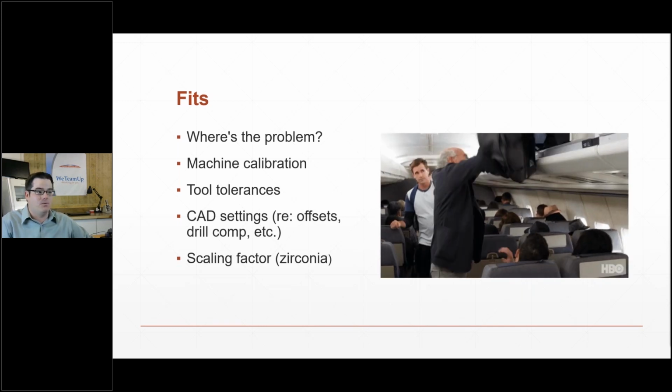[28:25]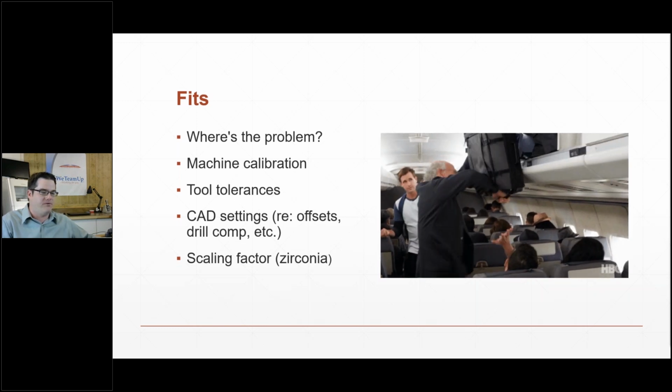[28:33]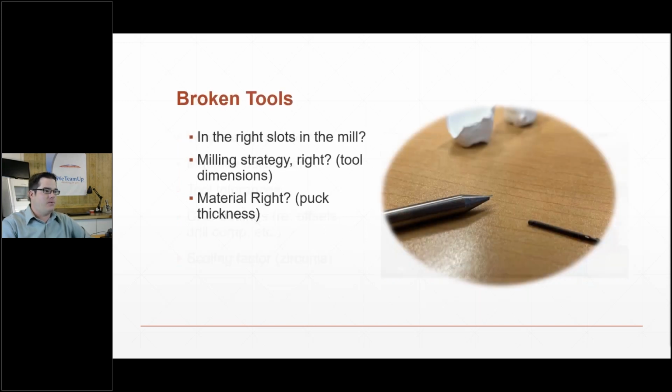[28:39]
Or if you have a tight internal fit, but the external is good, that could be a CAD setting. That could be a worn tool or a low quality tool. So you want to pay attention to where the fit is. Don't just consider it a fit issue. Break it down. And then finally, broken tools are always fun.
The biggest thing, make sure they're in the right slots. If your machine's expecting a 2 millimeter tool and it picks up a 1 millimeter tool, it'll break it, guaranteed. Doesn't matter what tool it is. And then you want to make sure that the milling strategy is validated with a tool. So if, for instance, you use a tool that's not validated, the CAM software might not know the actual shape of the tool, and you can get impacts either with fixturing material or the actual part you're milling. And if a tool is impacted from the side while it's milling, it'll certainly break.
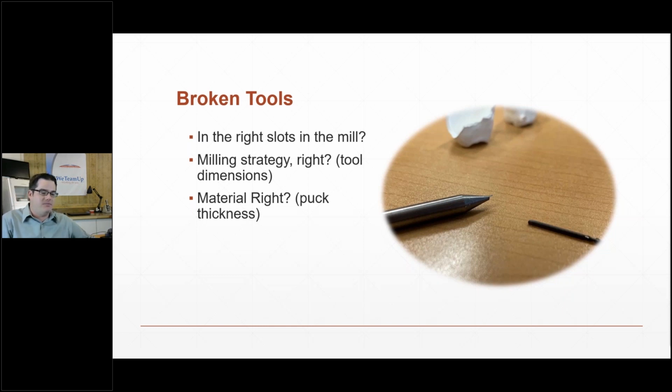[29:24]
And then this is an easy one to do too. If you program your machine for a 14 millimeter puck and then you accidentally put an 18 in there, you'll break tools very quickly because it's taking too much material in the first pass. A couple little tips on that. Usually if you're breaking tools, it's indicative of a bigger problem. Tools really shouldn't be breaking if they're being subjected to the right environment.
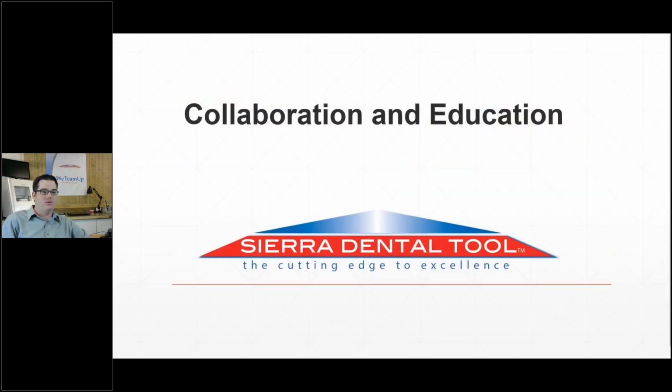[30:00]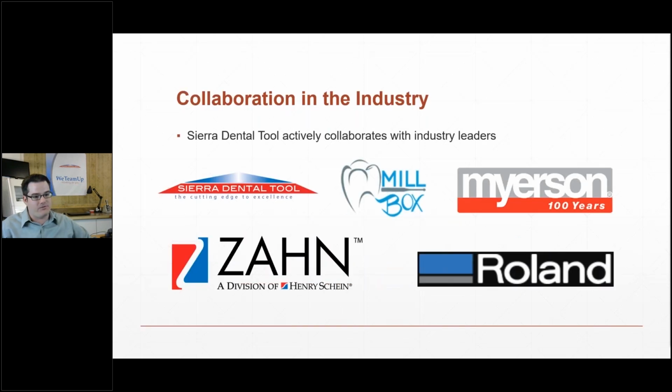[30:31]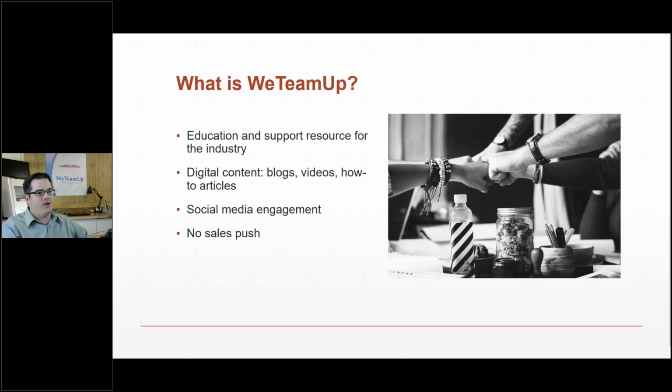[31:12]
It's found at weteamup-dental.com, which I'll have the URLs and everything at the end, so you don't have to write it down. And basically, it's just an education resource. It's blogs, videos, digital education.
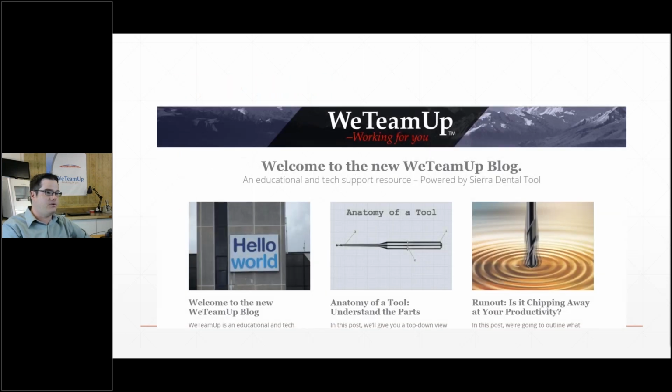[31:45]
And there's not a sales push. You're not going to find anywhere in there where I'm saying, hey, buy this or buy this. It's just one directional. We want to make sure that people are getting the best out of their situation from a CAD/CAM standpoint. And that's what it looks like. It's just a clean blog-based site, and you can read about a lot of the stuff that I'm rambling about in this presentation.
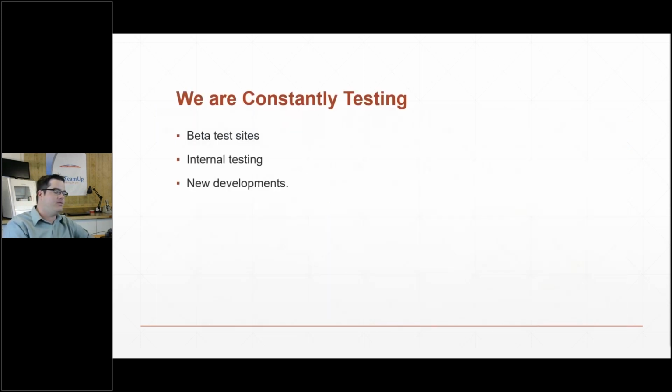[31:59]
I kind of threw this in at the last minute, but it drives the point that we're listening to the industry and we're constantly developing. So we're always testing. We have a network of beta test labs, and that ranges from the single man, single machine lab all the way up to the major production facility. And so we're constantly getting feedback on our tooling and development.
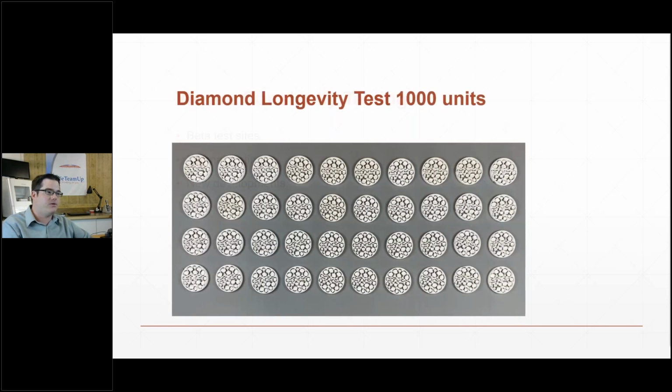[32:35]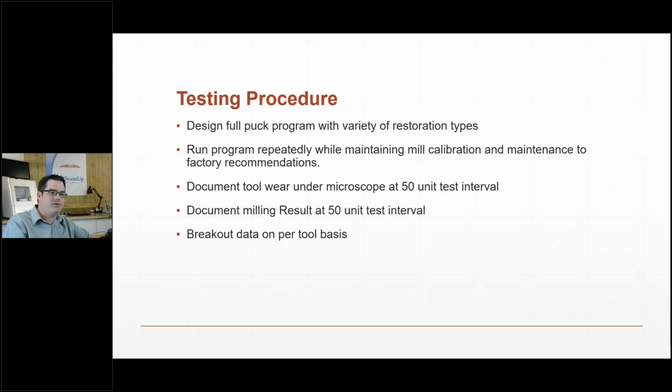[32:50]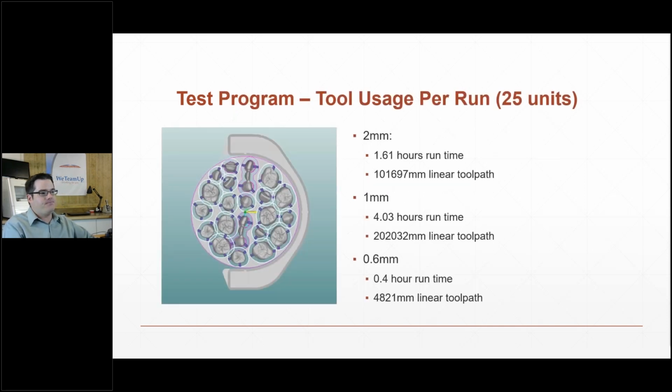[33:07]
And then we also do a lot of internal testing, and just recently ran an internal test where we took our nano diamond product and milled 1,000 units in zirconia. So I'll quickly run through what that test looked like. What we did is design nested a puck, 25 units, and ran it over and over and over again, and then broke out everything per tool, which is actually kind of fun because it's interesting to see how things progress. This is the test program, and it's broken down by tool.
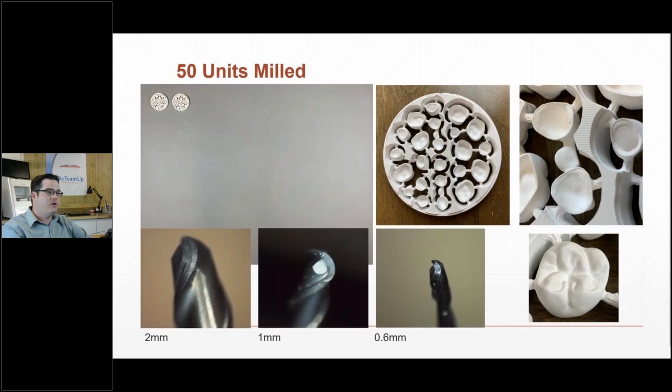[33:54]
So this is kind of an interesting thing to think about when you're thinking about tool wear. A typical program is going to be mostly 1 millimeter tool paths. So you can see this one runs the 1 millimeter for 4 hours, where the 2 millimeter only runs for 1.6 hours. And it generally runs about in that ratio. It's like a 1 to 2 ratio. And then the 0.6, as you can imagine, doesn't do very much. It's only doing your detail run. And so you'll see that the wear on a tool actually develops along this ratio, which is kind of interesting to see.
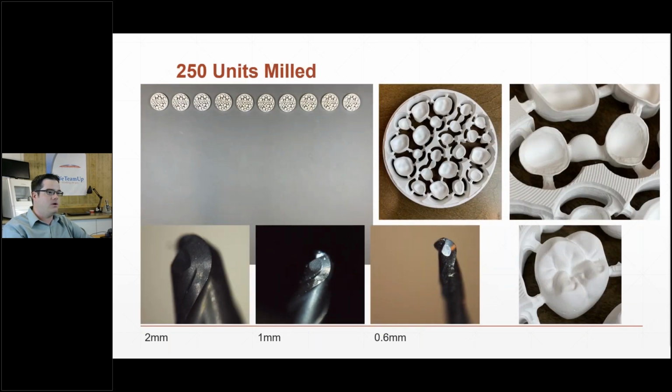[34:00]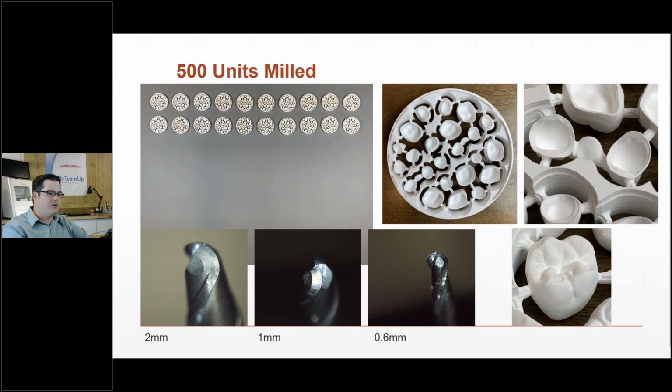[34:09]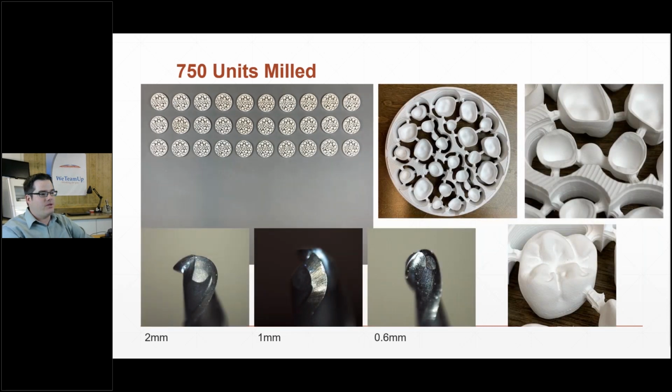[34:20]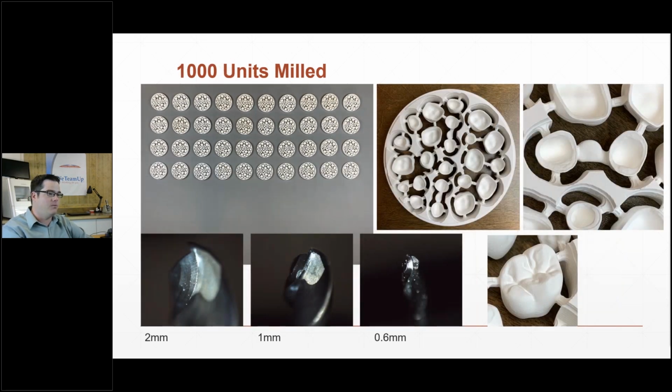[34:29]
So here we are at 50 units. There's no wear at all. And 250 units, looking good still. 500 units, we're starting to see a little bit of wear facet on the 1 millimeter, tiny wear facet, but nothing to be worried about, still getting very good results. 750 units, it's essentially the same situation. And then around 1,000 units, I'm starting to see some wear on my 1 millimeter. And it's still got some life in it, but the test was just to illustrate a 1,000 unit run.
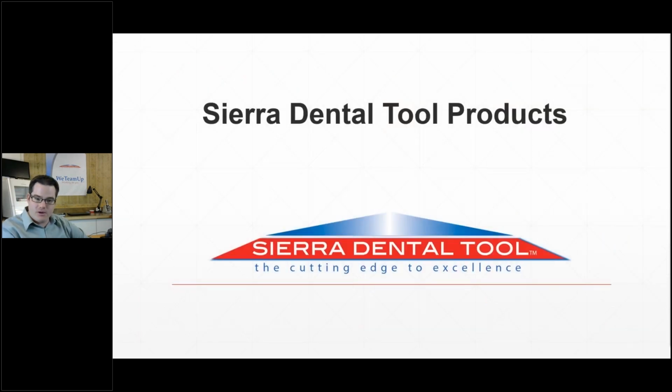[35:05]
And so the point being here is that we back up what we say. We advertise that the nano die does 700 units, but that's somewhat of a detune so that we don't set a really high expectation. But the point being is that a quality tool really does go the distance. Let's see here. I'm about 40 minutes in. I'm going to bust through this real quick here.
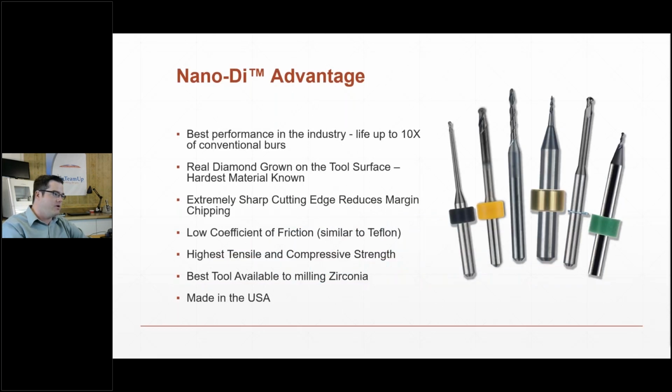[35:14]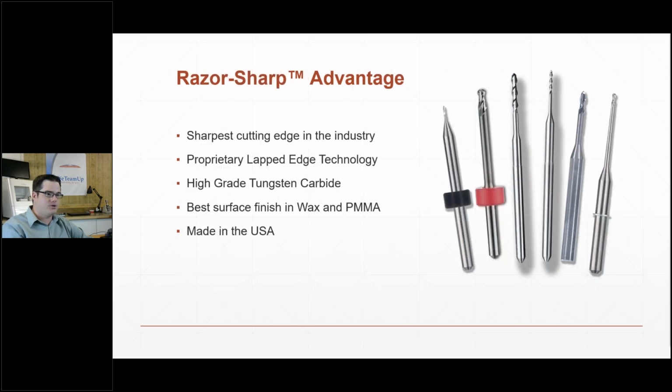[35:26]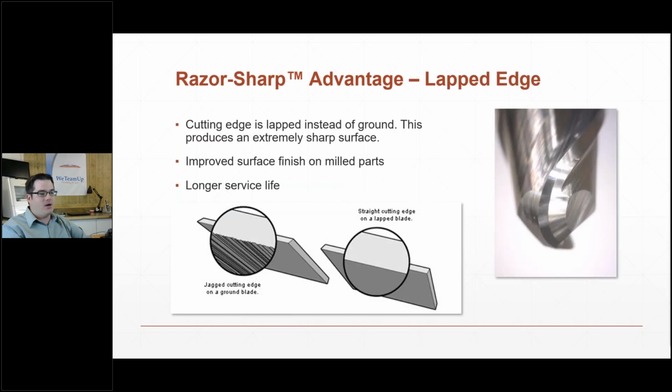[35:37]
So quick overview on products. The majority of what I've been talking about has been Nano-Di. We make tools for all cutting, all mills that are on the market, essentially. Then our razor sharp. These are our uncoated tools. They're better than other uncoated tools because they have our geometry that's developed for dental, and they also have a surface treatment feature to the cutting edge that makes it much sharper. And so since the tool starts off sharper, it wears longer. So in zirconia, you'll get 150 units instead of 50, comparatively to another carbide. And then in soft materials like wax and PMMA, much better surface finishes and fits.
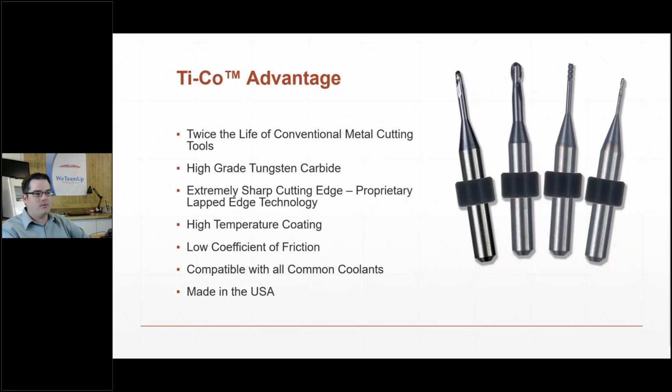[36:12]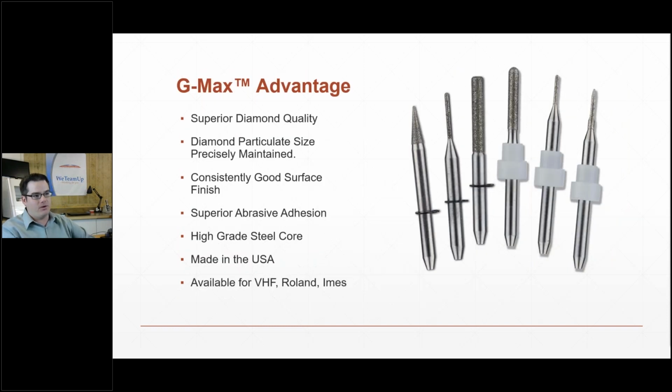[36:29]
This is certainly proven in the industry. People are very happy with these tools. And then if you're cutting metal, we make a great line of metal tools. They're called Ti-Co. Proprietary coating, our geometries that are optimized for titanium. We also have a line of grinding tools. So if you're doing Emax blocks or any other sort of glass ceramic milling, we've got you covered there.
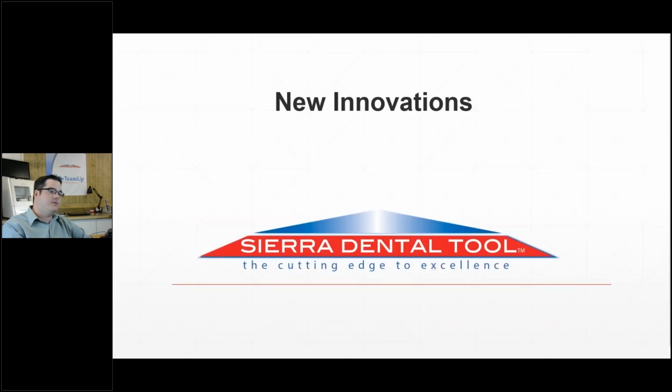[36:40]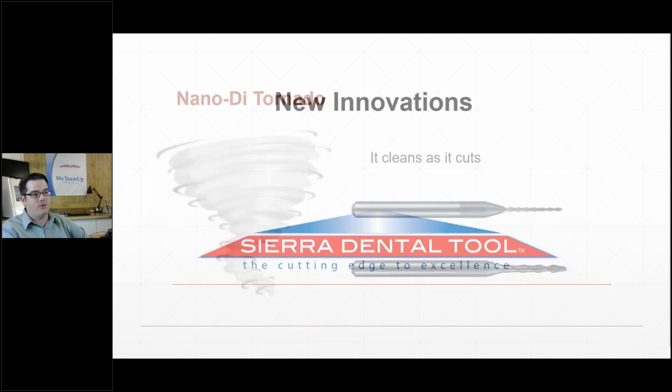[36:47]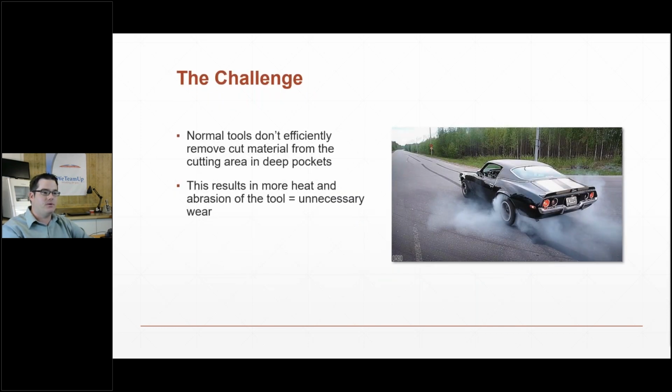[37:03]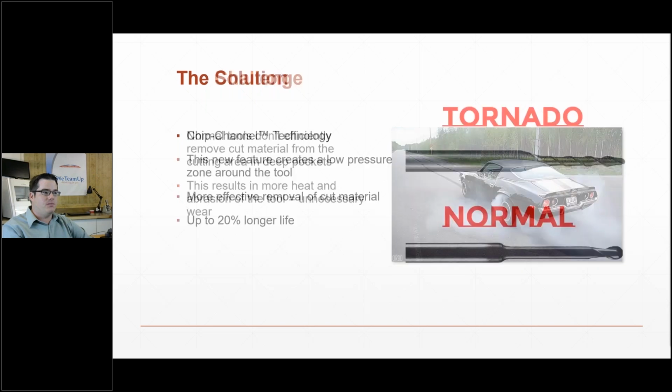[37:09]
So I've got a couple of new things to share with you guys. First off, Tornado. This is a new tool for the Roland system, unfortunately Roland system only. And what it is, it's a new feature along the shank of the tool that addresses the issue of material evacuation. So essentially what it does is, as the tool's running, it creates a low pressure zone around the tool that helps move material away from the cutting area. And what you get is a longer life and better results overall. So if you're not familiar with Tornado, it's certainly something to look at.
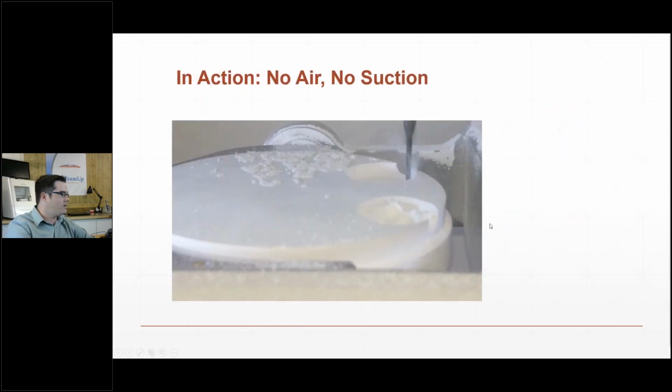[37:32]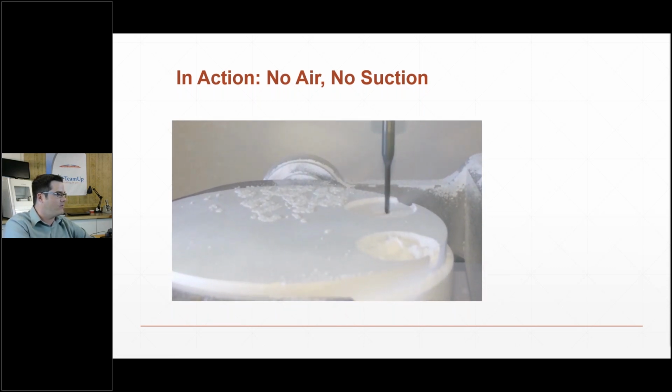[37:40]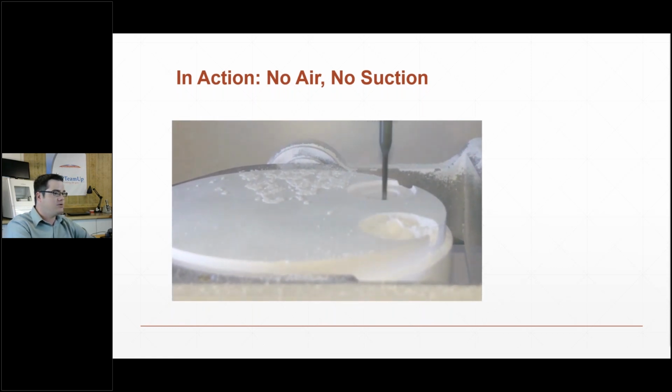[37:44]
And then I've got a quick video of it running. So you can see, if you look closely, you can kind of see the vortex form around the tool. It's pretty neat to watch. And this is being milled to demonstrate without any air or suction.
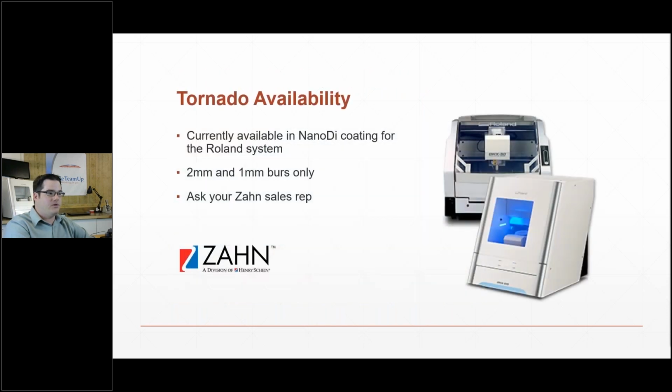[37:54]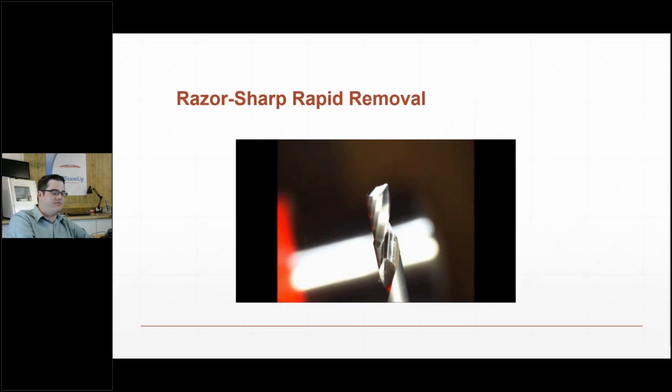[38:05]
So again, it's NanoDi on the Roland. Your Zahn salespeople know all about them. They can help you out if you want to try them. And then the second fun thing, which is newer than Tornado, is our razor sharp rapid removal tool.
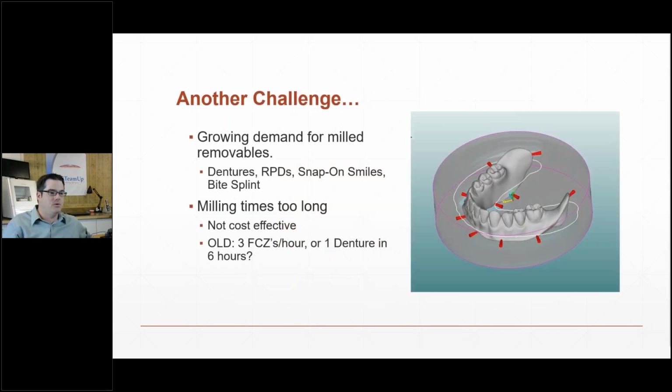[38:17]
And this is developed for the Roland platform, and it's an answer to the need for reduced process times in plastics. So if you're starting to do digital dentures or any of the other plastic restorations, you'll find that it takes a very long time to mill them. The majority of the time that's used up in the current state of things is the roughing. So it takes a long time to actually bulk remove that material.
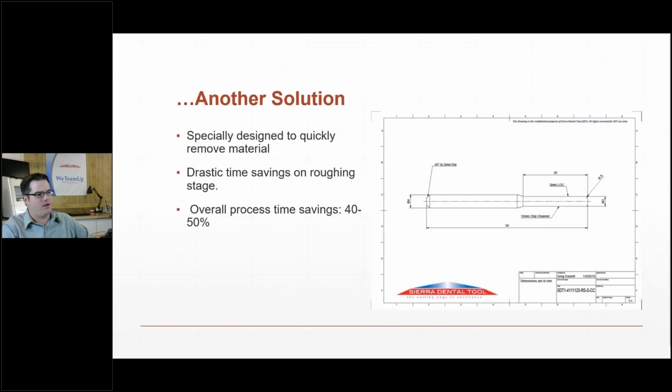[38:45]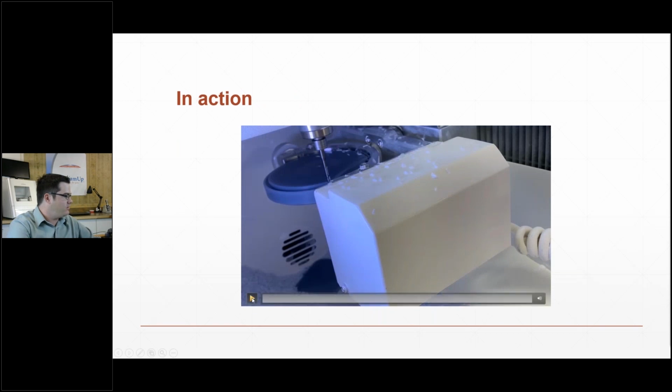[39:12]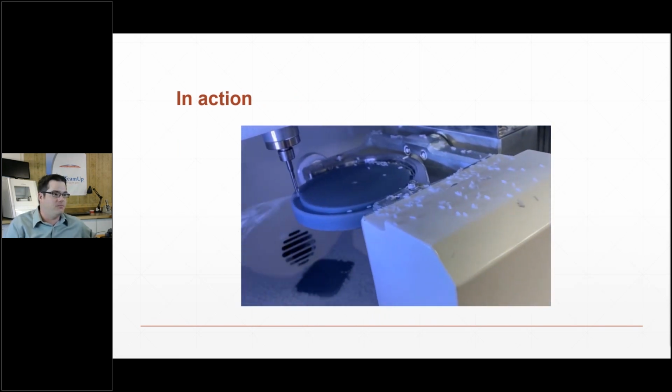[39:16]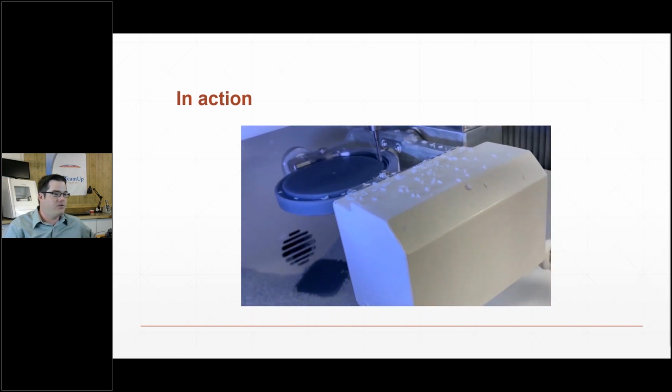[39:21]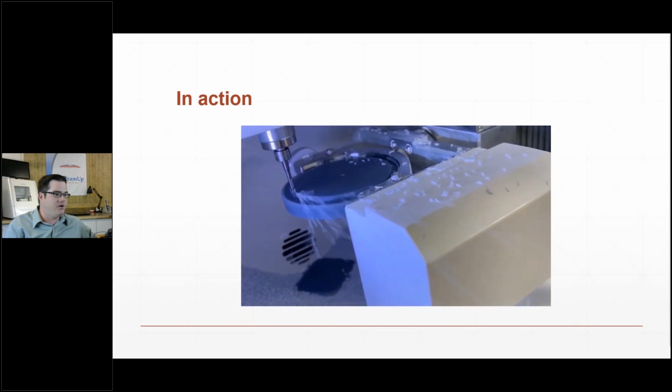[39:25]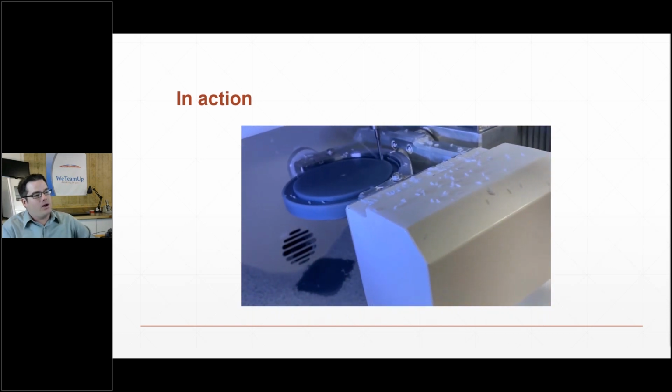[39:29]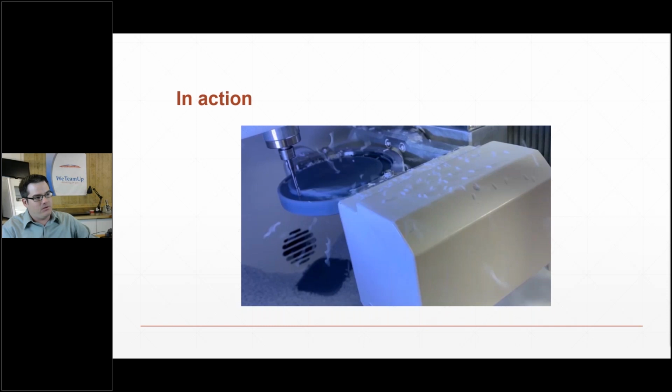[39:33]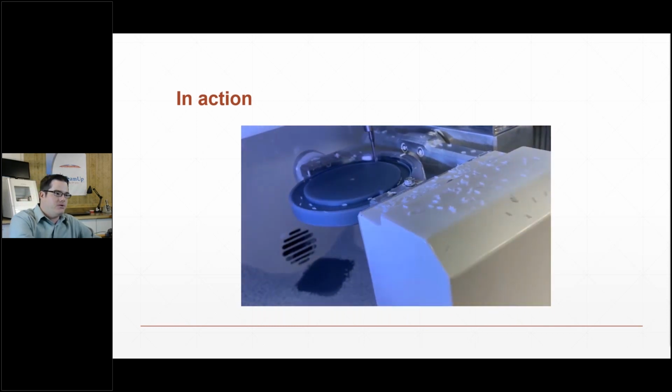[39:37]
And so we looked at that and designed a special tool that's got geometries that are going to help reduce that process time by increasing the amount of material the tool can rough. So we can actually remove 6 to 7 times the volume of material than the standard geometry tool can. And this is a little video of the tool roughing 3 millimeters of wax in one pass, which is pretty cool. This is actually a video of the tool roughing the entire disc away, which took 8 minutes. So it went from a 14 millimeter disc to nothing in 8 minutes, which is pretty sweet, I think.
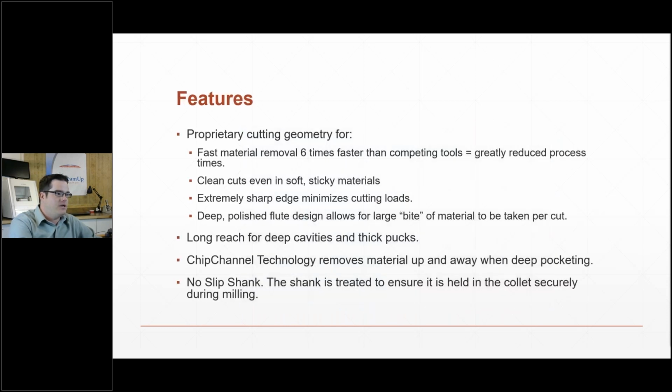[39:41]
So I'm not going to get too deep into that, but into the features. But essentially, it's a hogging tool. It's meant to just remove material fast and get to the point in the material into the program where we're doing finishing.
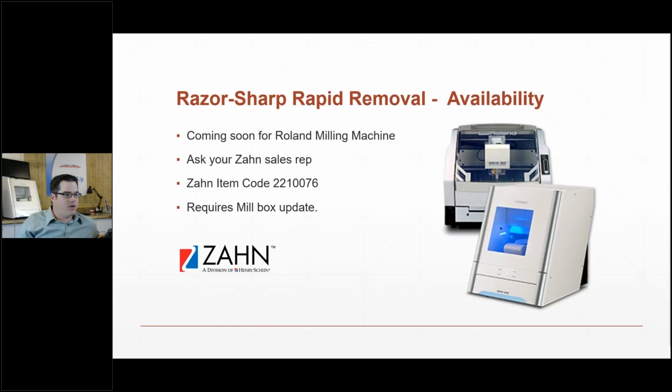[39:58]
They're working on the Millbox update, which I think we expect to hit very quickly, maybe in the next week or so. And so if you're current on your Millbox license, you can order the tool and get an update, and then you're off to the races. So it's as simple as that. And the way it's set up in Millbox right now is it defaults to the original tooling, but you can select to use this tool if you've got it.
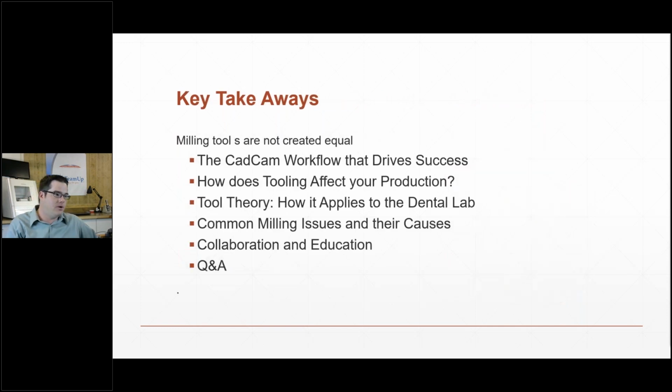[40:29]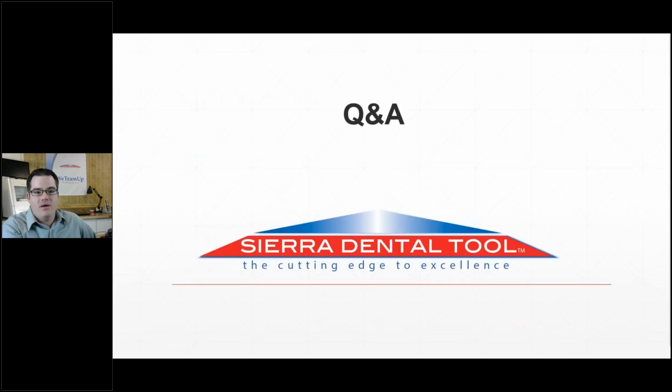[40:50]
So again, we're looking at workflow as a system, and the importance of tooling in that system. Make sure that you consider what you're getting when you're looking at tooling. With that, I'll jump in, see if we've got any questions here.
Okay, so I've got, what is the general margin thickness you recommend running from your experience? So people like to get aggressive because we don't like to finish those margins down in the lab. 200 microns is the minimum. If you go to 250 microns, if you can deal with that in your production, you'll have less chipping. I know there are labs out there that go down to 50 microns, but it's a sliding scale. So the thinner your margin, the more you're going to chip no matter what.
Let's see what else we've got here. Okay, so have you tried, this is Joel, have you tried testing the razor sharp with bite splints and PMMA? Absolutely. In fact, I have one here in front of me. This is a bite splint that was machined on a Roland machine with the new tool in an hour and a half. And the webcam doesn't do it justice, but it's got a very, very nice surface finish. So yes, we definitely do test on bite splints.
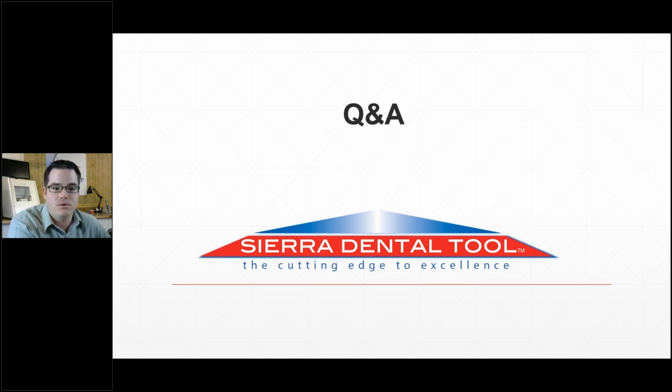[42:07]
Okay, which tool was available to get 1,000 units, or does it work in Motion 2? Yeah, so we do have tools for Motion 2, and it's the same thing. It's our nano die coating on our tools for that machine. You can call your Zahn rep, they'll have everything, and they'll be able to get that to you. Let's see, average lifespan of the 1 millimeter coated tool.
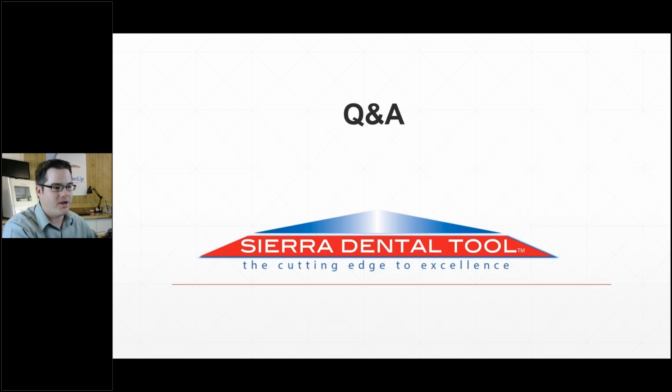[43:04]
Let's see, so to answer the lifespan thing, it's a function of material, mill, and the environment that the tool's in, just like the tire analogy I made before. So if everything is ideal, 700 to 1,000 units is very achievable. If there's something else going on, it can be less than that. Or if you're milling like a soft zirconia, we have labs that that'll go above 2,000 units. So we base all of our business cases off of 700 units because we feel like that's a conservative number for most applications.
When will the Rapid Removal be available for Veal and Select? That's Darren. So not at this time, but we're going to be looking at that platform next after we're done here with the Roland system. Let's see here. The tools you discussed only for Roland milling machine. Yes. Right now, the Tornado and the Rapid Removal are for Roland applications. And Darren's question there, we're looking at rolling it out into other systems also.
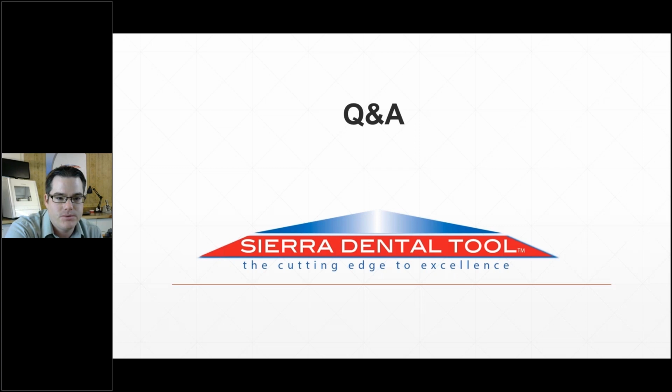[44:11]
How do we get the milling strategies for these burrs? That's Dean. It depends on who is your reseller. If you're a Zahn or Cap customer, you already have them. For the new tool, that's just an update. You need to update your Millbox version, and with that update will come the new strategies and settings for that.
Let's see. Just have one that says on zirconia. I'm not sure what that is.
What other cam options are for Wieland Select, and which is best in your opinion? So Wieland is closed. I'm not going to endorse a specific cam supplier, but it's fairly easy if you want to make the investment in an open cam. The two that come to mind are Sum3D and Hyperdent. They're both very capable. I would recommend contacting those companies and taking each one for a test drive and deciding which one you like better before you make that decision.
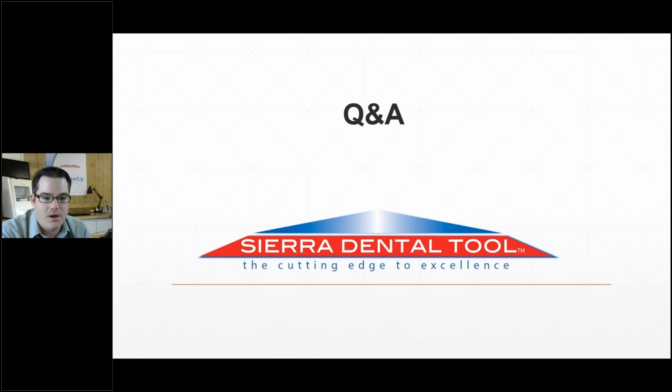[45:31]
Let's see here. I think I've gotten to most of them.
Will an update to the older version of Sum3D have the option of getting milling strategies, or do we need Millbox? So Sum3D is the guts of Millbox, like you said, Dean. And the answer to your question, if you're used to using Sum3D, you don't absolutely need the Millbox, but you need your licensing to be up to date. And with the licensing, you're able to run the new strategy. You can look and see where your licensing is on Sum3D. If you just go to, I think it's Help and About, it'll tell you the date of your dongle. And your Sum3D reseller can help you out with that. It's not an issue.
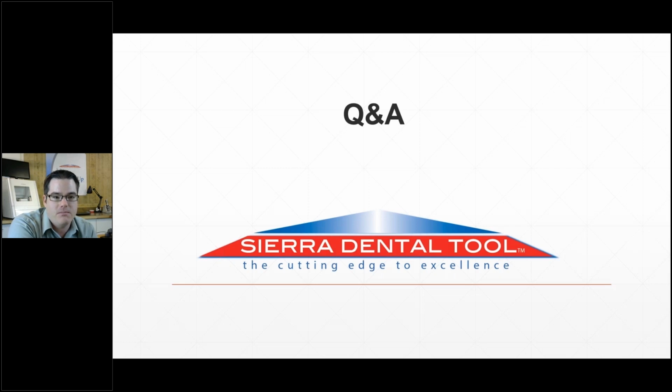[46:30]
Let's see. I think that's it. I might have skipped over one. Let's see. I think I answered most of them. Is there anybody else who has any questions, or are we doing good? Oh, here come a few more.
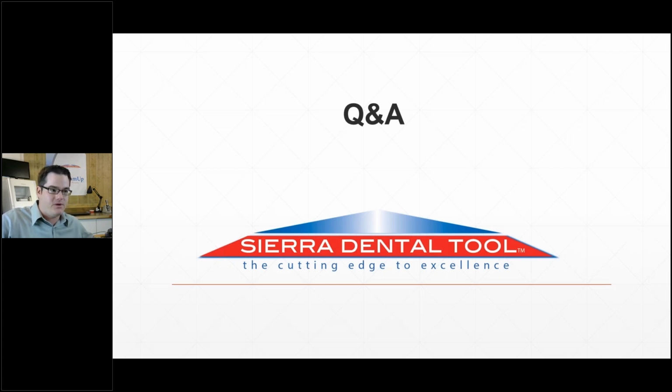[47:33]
What's the air setting at? Joel. So for the test video from earlier, the air was set at 0, it's off, in order to take that video. Now, I recommend running the stock air setting, which I believe on the Roland, don't quote me, is like 0.1 bar. I just go by what the manufacturer says on that. My unofficial opinion is that higher is better, but the manufacturers set their settings because if you run an air pressure that's too high, you can end up pushing the zirconia powder into the mechanics of the machine and cause it to wear prematurely. So there's a balance there. For a tool, I want 2000 psi on that thing, just to get it clean. But that doesn't really work in the machine. So there's other things that come into account, and that's why I say just look at your manual and run it right there.
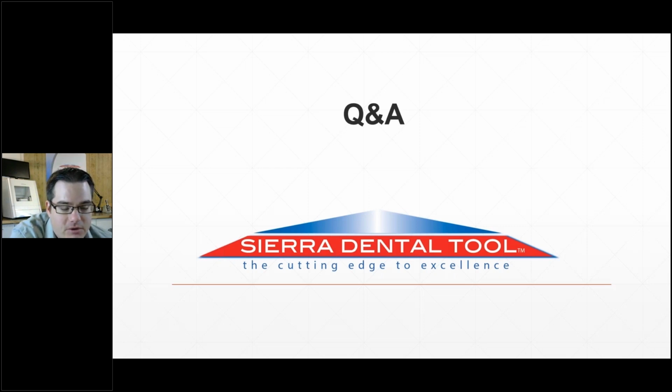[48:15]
What's the next question? Is there going to be a video of this webinar? Yes, Amanda will be putting it up on YouTube. I'm not sure what the time frame is on that. Maybe can you speak to that, Amanda? Is that a couple days? Yes, usually we try to edit and send it out as soon as possible, but please wait a few days just for processing. Okay, great. Absolutely, this is going to be available on the Zahn channel.
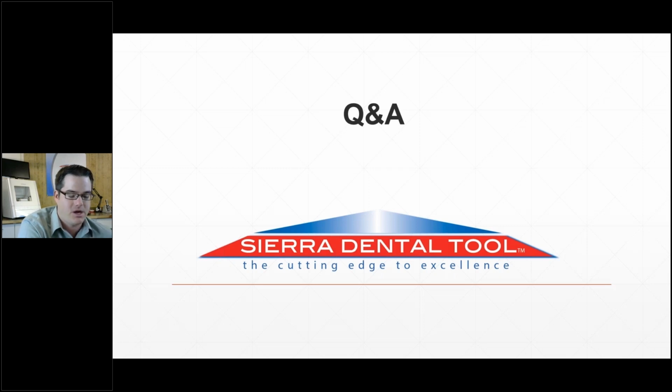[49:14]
This is a great question, Dean. How do the nano burrs differ from Zahn's ultra diamond burrs? As everyone's very well aware, Zahn bought CAP, and prior to that acquisition, Sierra Dental Tool manufactured the tools for CAP. So post acquisition, the ultra diamond tools and the Zahn tools are actually the same exact tool. They just had different labels on them. And we're actually rolling out an effort currently that is combining the labeling on those tools. So coming up, I think in May, there will not be any more CAP branded ultra diamond tools. They're just going to be the Zahn Sierra nano diamond tool. So that's to answer the question.
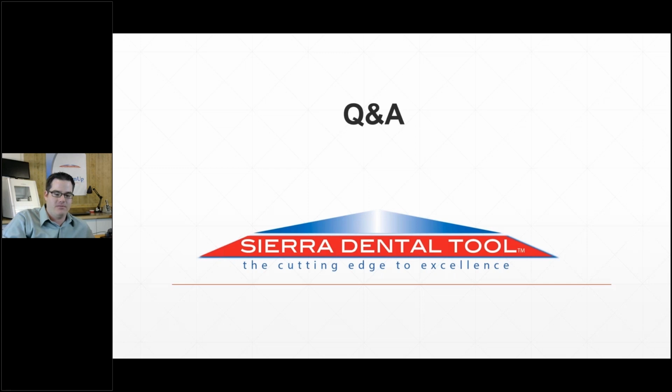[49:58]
And Joel is asking me if I still go by CAD Cam Greg. That's funny. You can call me CAD Cam Greg if you want, Joel. He's referencing that I used to make these wax pucks before I worked with Sierra, and I called myself CAD Cam Greg. Kind of funny inside joke. Thanks, Joel.
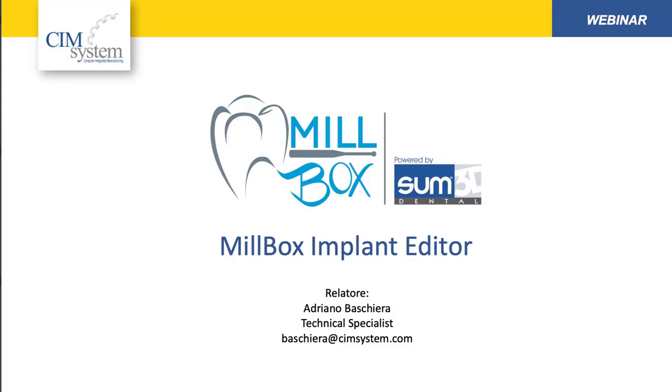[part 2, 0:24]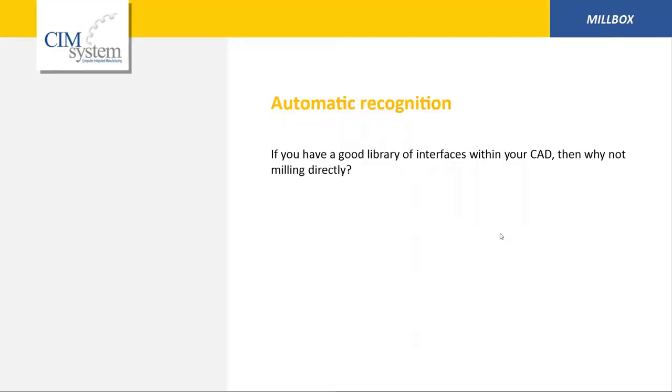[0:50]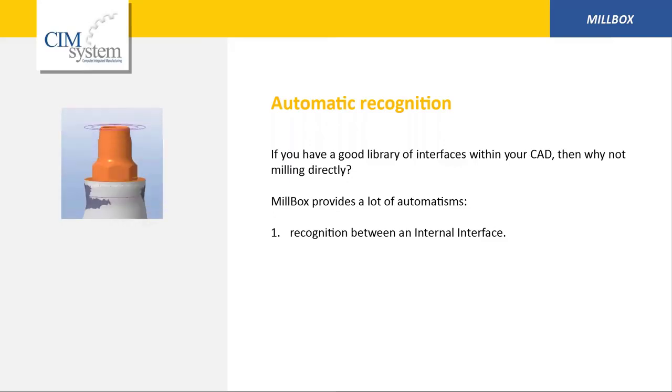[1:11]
Today we are going to have a webinar on MillBox Implant Editor and its integration with MillBox. First of all, in MillBox, it's possible to mill directly from STL file or using a replace system feature that is inside MillBox. It's important inside automatic recognition, we can manage directly the STL file if it's a good surfaces. Also because MillBox provides a lot of automatism. For example, it is recognized in an automatic internal interface, like this example we're seeing in the left part of the monitor.
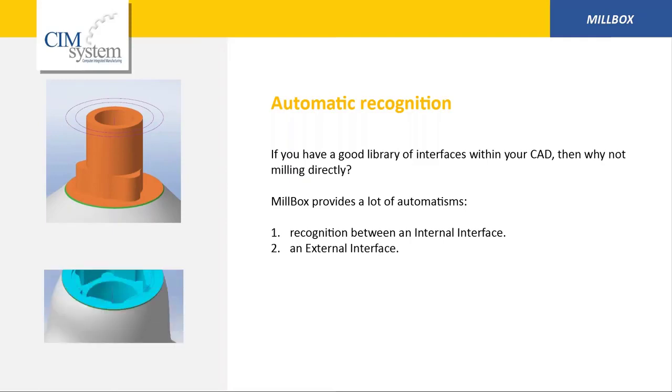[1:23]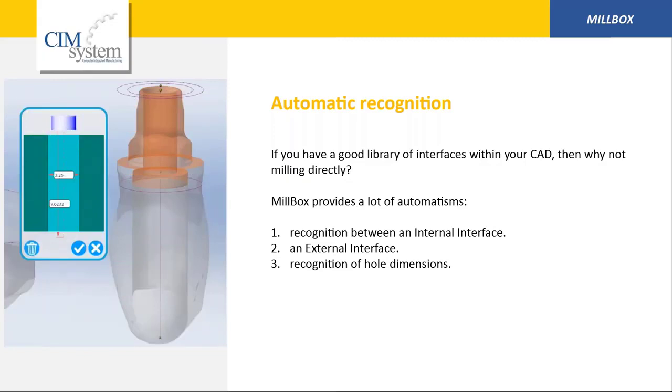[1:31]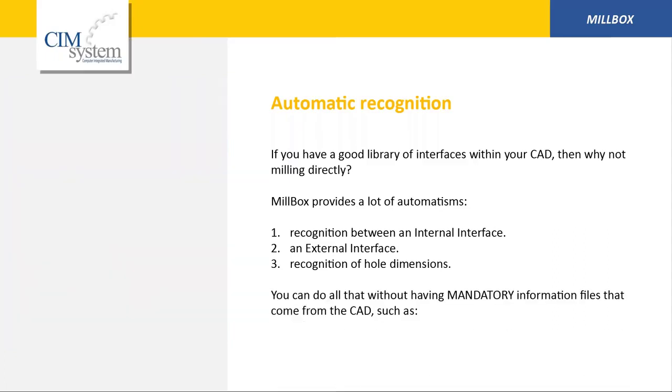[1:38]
In the external interfaces, like this one, and also the recognition of hole dimensions. It can recognize the diameter and the length of each holes. More important is that it's not necessary to have information files from CAD, such as construction info, PTS, HML, etc.
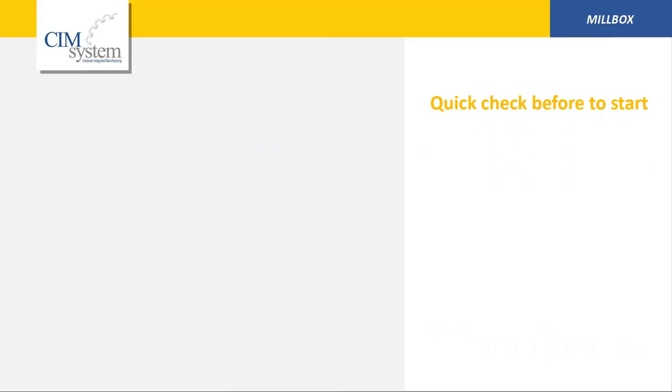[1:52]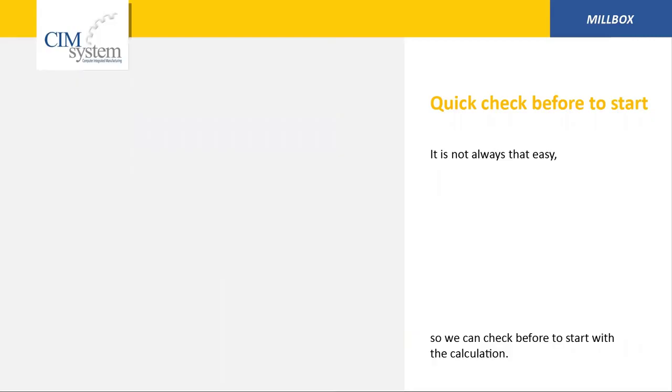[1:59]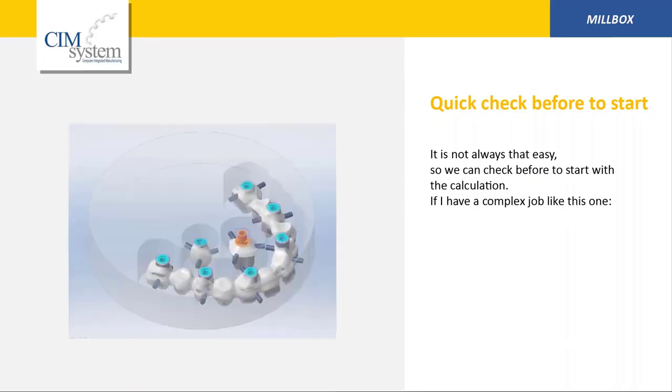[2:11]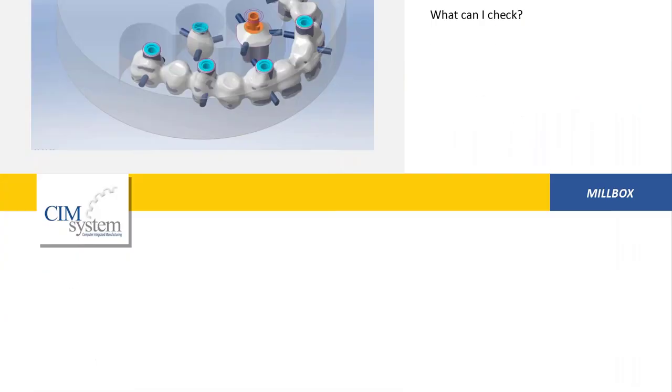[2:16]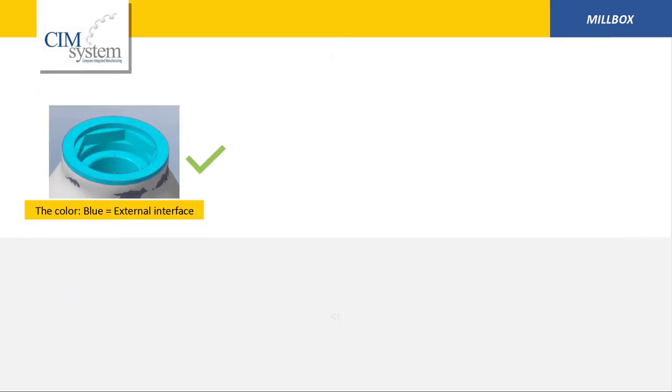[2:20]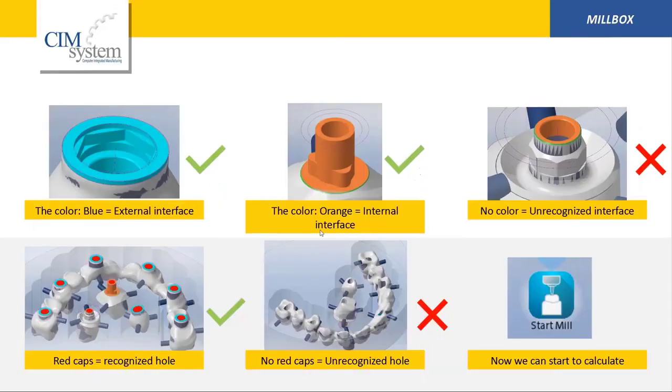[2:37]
It's important to have a quick check before start working on this kind of STL file. So it's important to check that some simple feature was correctly recognized. For example, we can check that all the holes was recognized properly, all the connection. Here you can see in different colors, orange and blue. If all this is okay, we can go on.
So here you can see some different cases. So external interface, orange interface for internal interfaces. In this case, it doesn't recognize properly all the connection. So this could be a problem working with the normal strategy and directly from the STL file. Here we can see also the red caps for all holes, means that all holes was recognized properly, not in this image. If all these parts are correct, we can start milling.
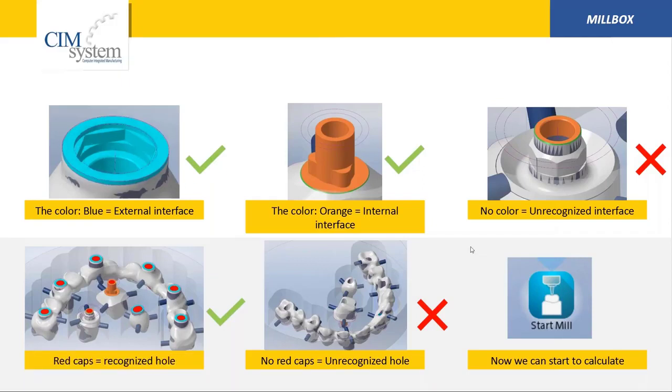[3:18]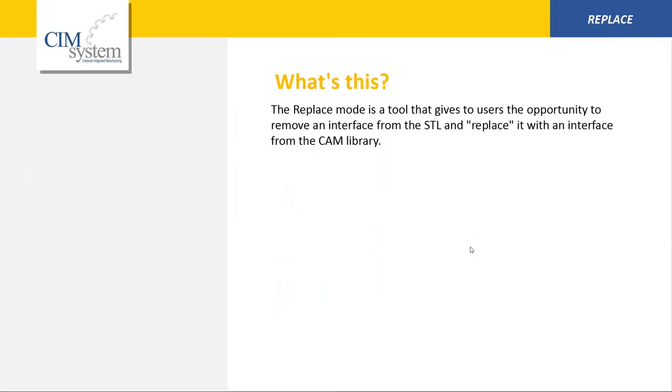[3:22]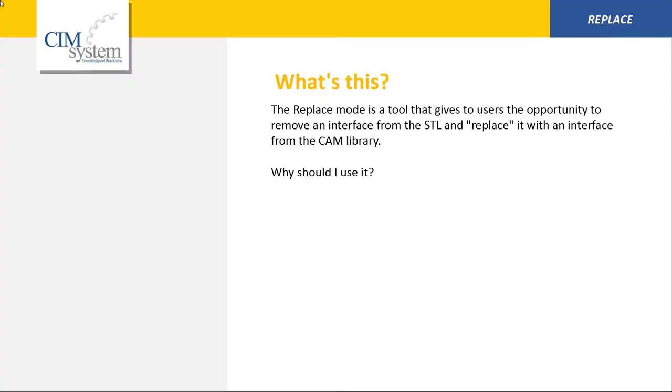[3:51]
But replace, we are talking about replace and design a new connection with Implant Editor. The replace mode is a tool that gives to the users the opportunity to remove an interface from the STL and replace it with an interface come from a CAM library. Why I should use this kind of CAM library? For example, because the CAD library is not so good. It's not of the correct dimension, STL correct dimension. Or in our case, because the STL has a fake interface, so it's not possible to mill properly the STL file.
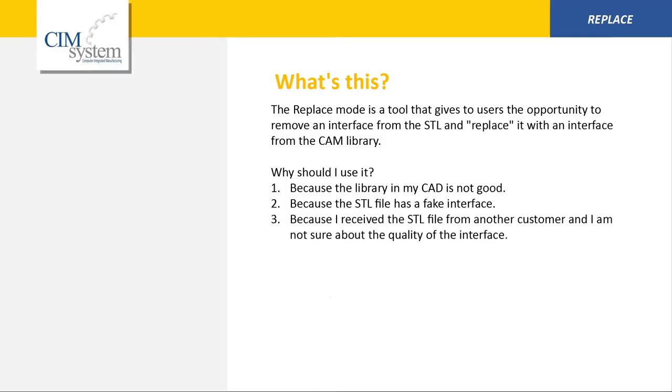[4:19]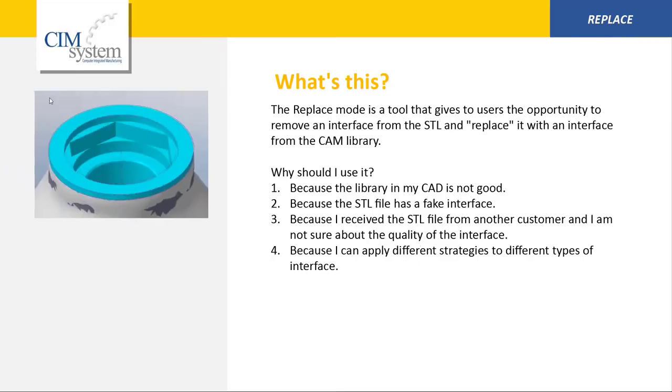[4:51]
In our case, because I received an STL file from another customer, and I'm not sure about the quality of the interface. So changing the interface with the replace system gives me the ability to have a proper connection. Or more important, because I can apply different strategy and tools to different types of interfaces. So in the upper image, we can see the original connection from the STL file, that was properly recognized by the software MillBox. And in the image below, we can see yellow colored, the connection replaced automatically with MillBox. So again, we can work directly from STL, but it's better to have the ability to change it and use the replace system.
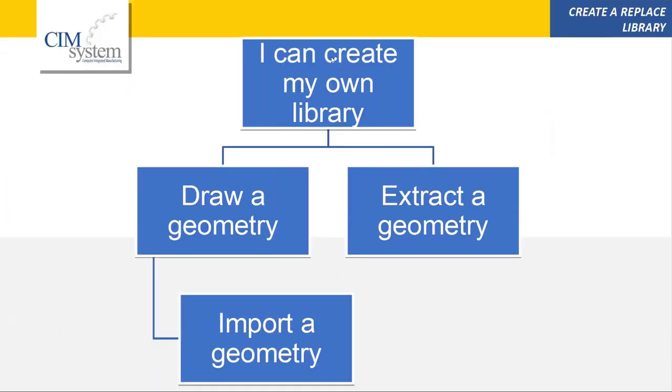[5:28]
Another thing is that I can create my own library of connection. It's important. And there are two different opportunities. I can create my own geometry, drawing my geometry by myself, or extract a geometry from an STL file. In this case, I should check that the STL connection is a good connection. In both cases, I can import this geometry inside the replace library and work with this kind of connection.
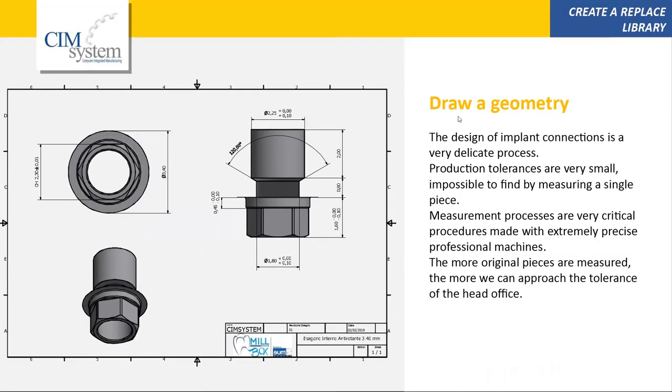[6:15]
We are talking about Implant Editor. It's a very useful tool, but we have to take in mind that it's an add-on of Rhinoceros. So when you buy Implant Editor, you don't buy Rhinoceros license. You have to have Rhinoceros already installed on your computer. Okay, this is very important.
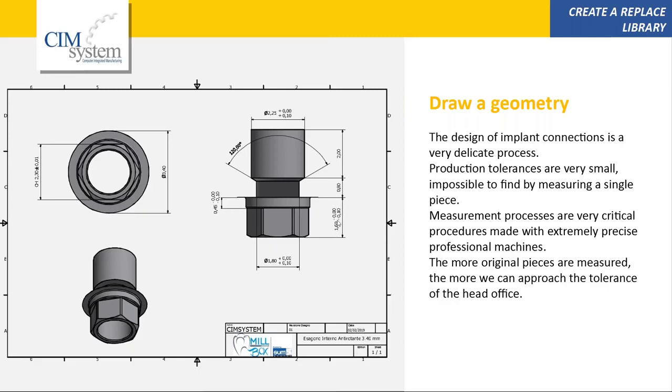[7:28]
Another point, MillBox Implant Editor is a very powerful tool, but to design properly the connection, you have to know different points. You have to know the design, possibly a bidimensional design like this. You have to know the tolerances of the design of the pieces. You have to be able to take this measurement, and so it's very important to understand how they are made and how to measure it. Another point is measurement processes are very critical procedures made by extremely precise professional machines. So the more original pieces are measured, the more we can approach the tolerance of the head office.
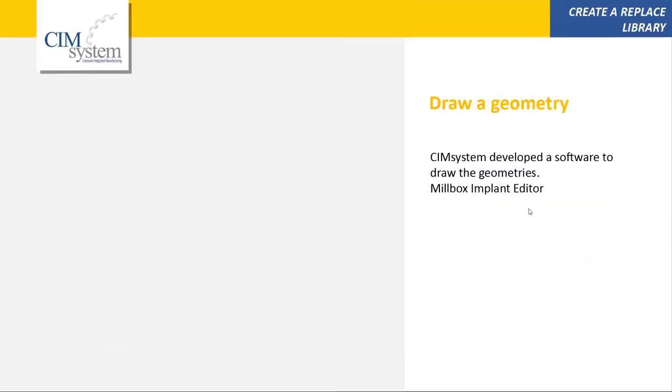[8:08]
Okay, so keeping this point in mind, CIMsystem developed software to draw implant geometries. Its name is MillBox Implant Editor. It's very easy to use. It's very intuitive.
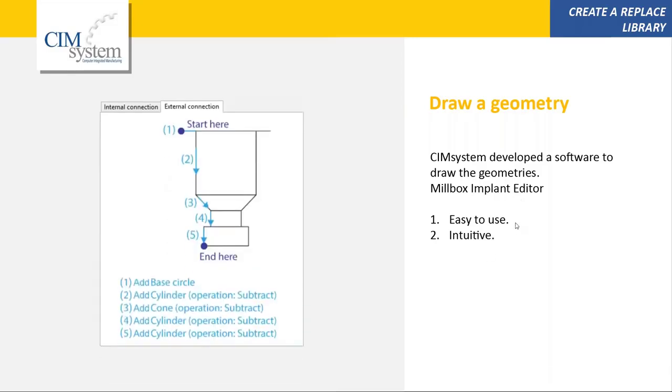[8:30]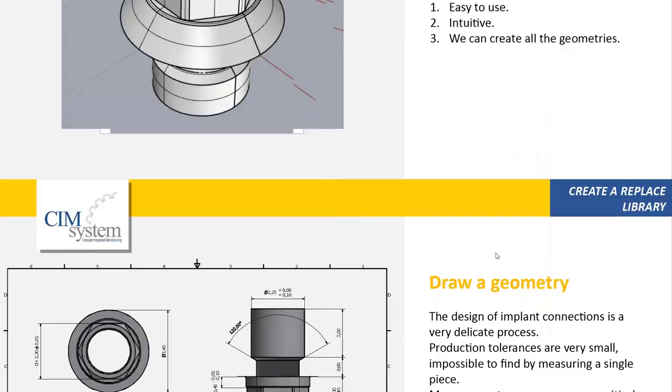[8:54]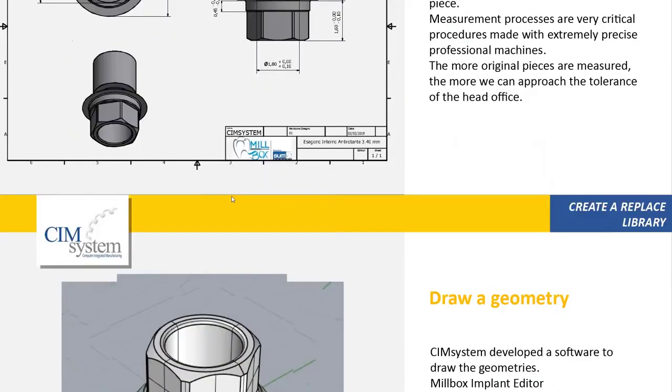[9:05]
For example, here, this is just a Windows example for external connection. So you start from point 1 and go through points 2, 3, 4, and 5, simply adding basic shapes. In this manner, you can realize your own geometry for implant design. Okay, here you have some examples. You can go on.
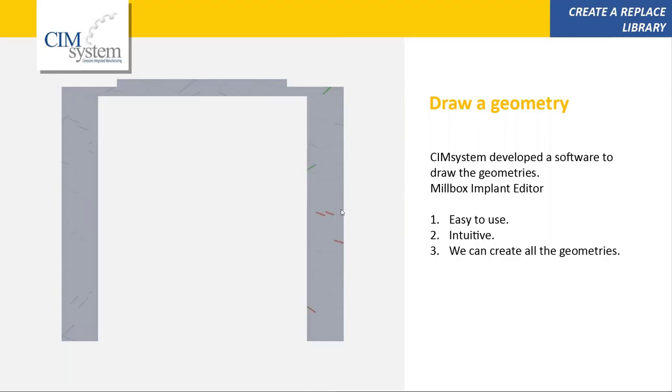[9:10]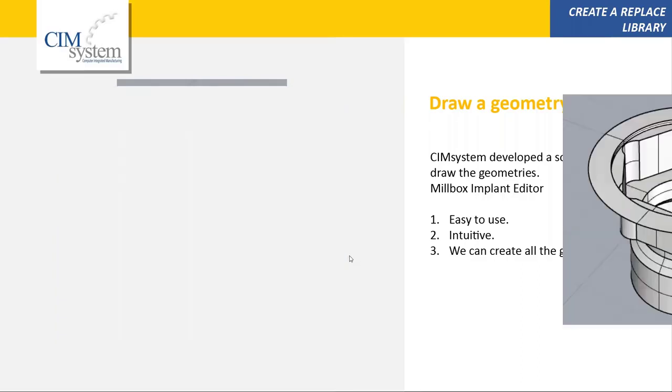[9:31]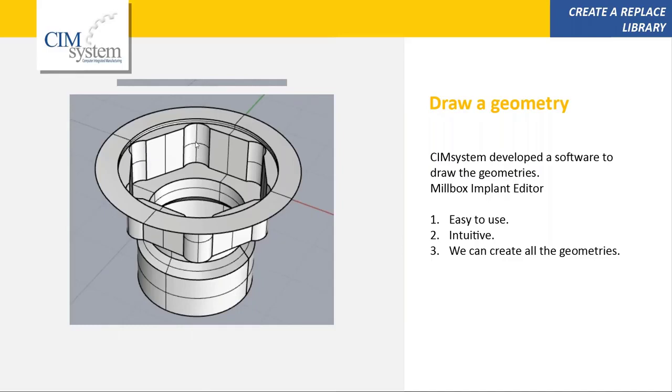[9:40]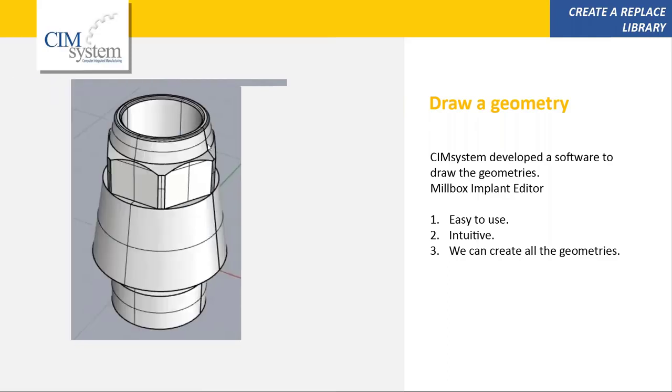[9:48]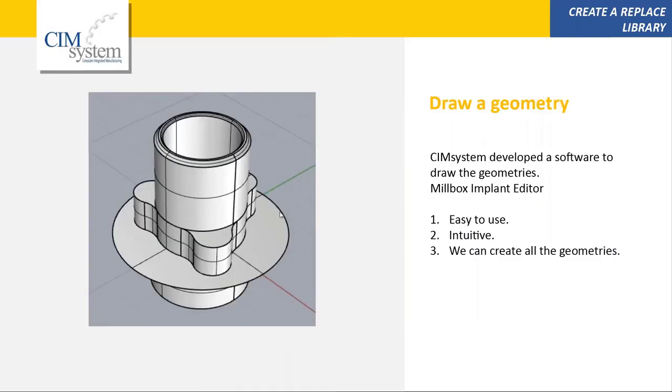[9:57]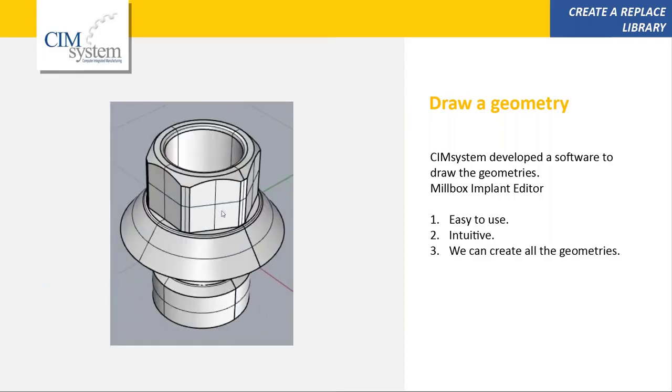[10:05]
This one I think is the most difficult connection to design and also to mill. Keep in mind here it is very narrow, so it depends a lot on the tools you have in your machines. This one is another one. Also, this one depends on the tools, on the burs you have on the machine. This one is similar without the round corner. This one is another example of connection with the cone part. And this one is another one. Today we're going to design some of these. This is another one.
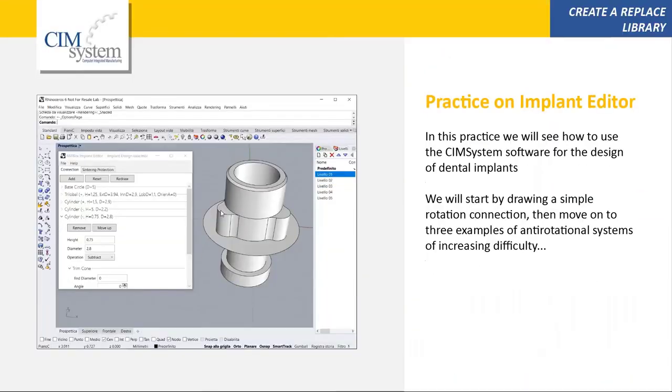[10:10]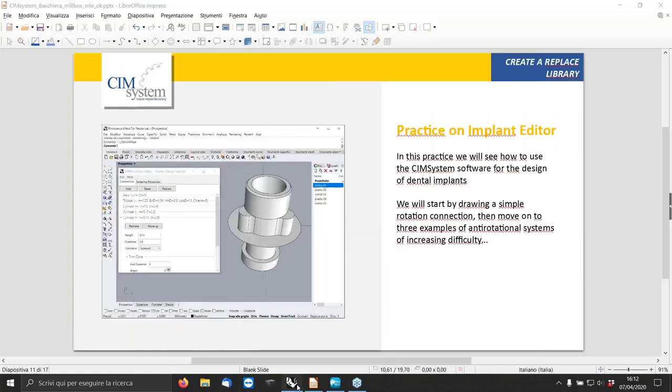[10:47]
So the practice that we are going to do today is to see how CIMsystem software works for dental implant design. We will start by drawing a simple rotational connection, then move on to three examples of anti-rotational systems of increasing difficulty. As I told before, we need Rhinoceros already installed on the computer. So we go back here.
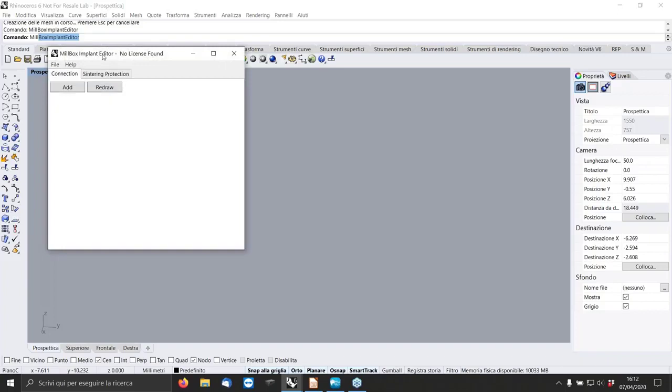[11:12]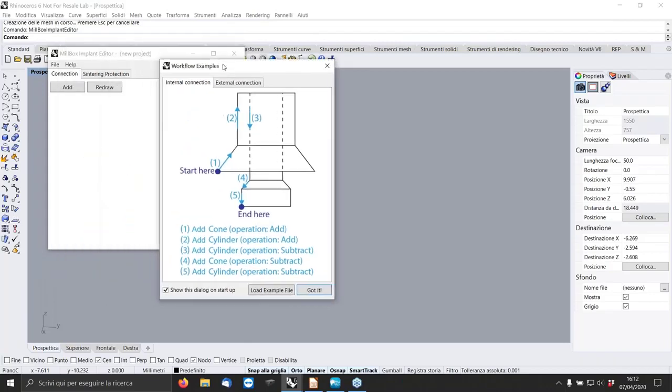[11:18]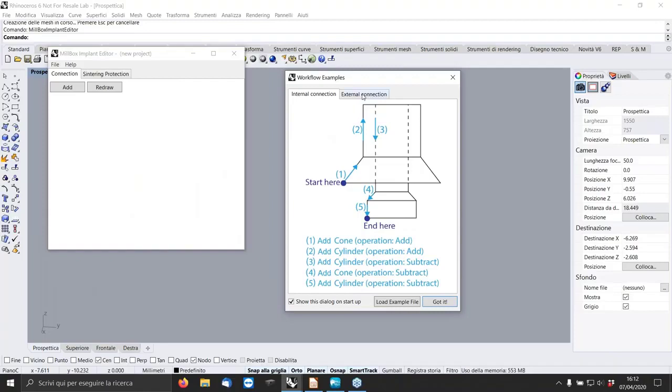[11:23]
Okay, this is Rhinoceros. To start, after the installation of the dental implant plugin, you simply write MillBox Implant Editor. Right click. And here it is. This is the first window we see about MillBox Implant Editor. In this window, we have two different kinds of example. As I already told, it is very simple.
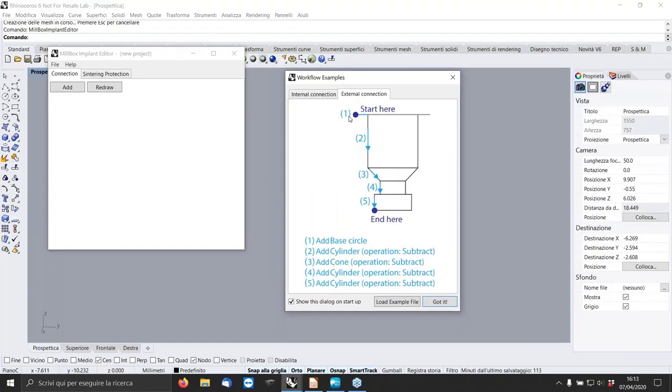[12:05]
We start from the first point, normally where the connection starts. Normally it could be a plane, a flat surface, or a cone. And adding basic features, we create our connection. It's important that each point is consecutive to the other: 1, 2, 3, 4, and 5. If you look, it creates a segment here. The same for the external connection. We start from the base, and then we add simple features to see our connection growing.
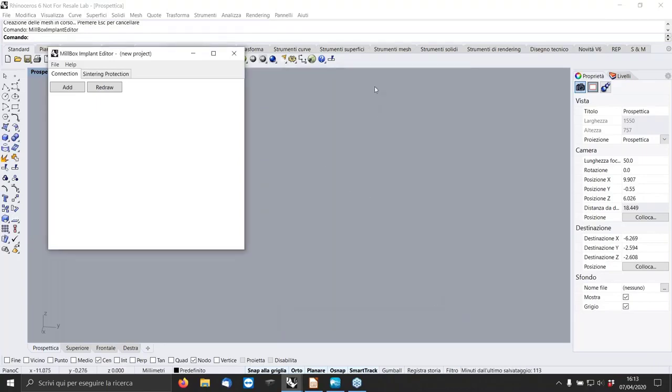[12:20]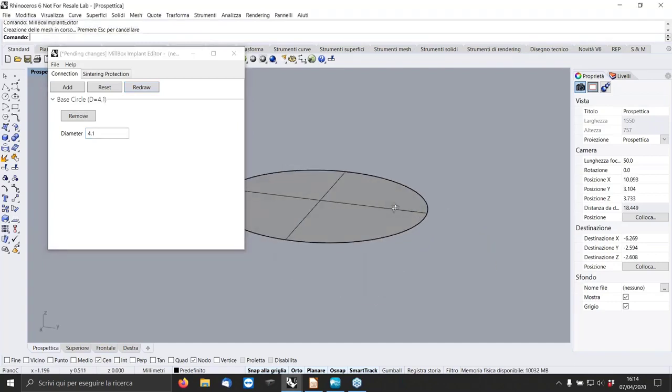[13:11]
Okay, that's it. So, for example, we're going to create a Nobel Biocare Brånemark 4.1 rotational. First of all, here, if we click Add, we can add different features: base circle, chamfer cylinder, cone cylinder, and other features we are going to explore now. So we start from the base circle. Base circle is the zero position, Z0, for the connection. In this case, we put 4.1 as the external diameter. We hit redraw, and here we have our first feature of the connection.
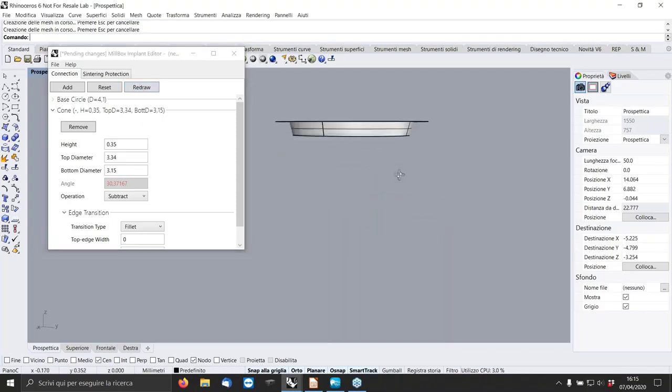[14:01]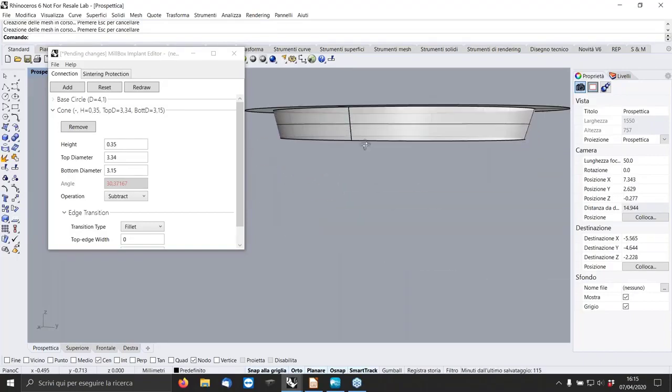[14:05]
We can add a cone. For example, here you can add the height of the cone, let's say 0.35, top diameter of the cone 3.34. We can add the dimension of the bottom diameter, which is 3.15. And if you remember, in this case, we have to go down with the connection. So we have to subtract this cone with this dimension. And that's it. This is the first part of the connection.
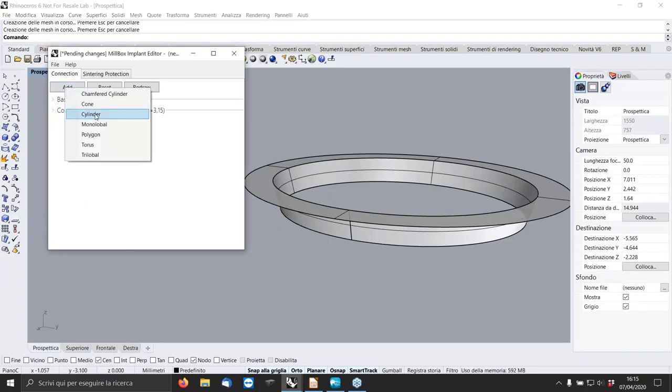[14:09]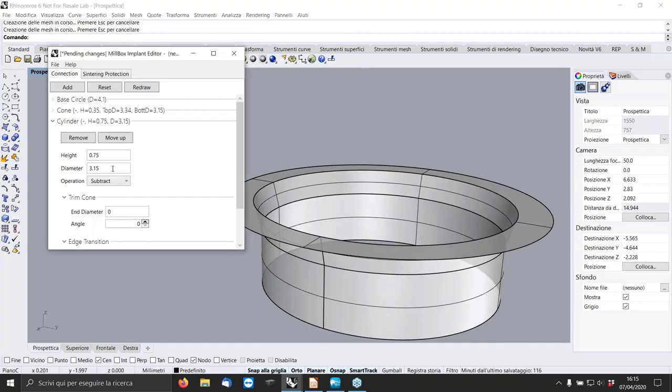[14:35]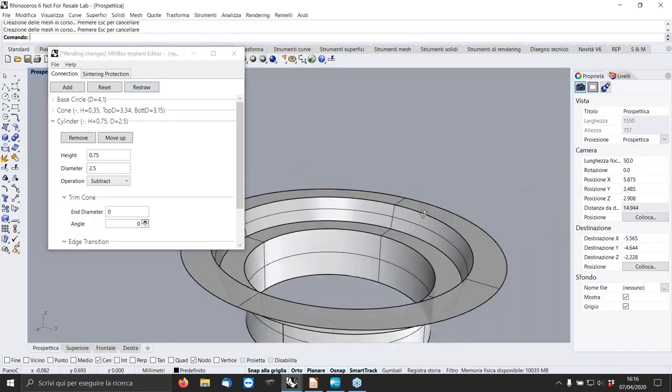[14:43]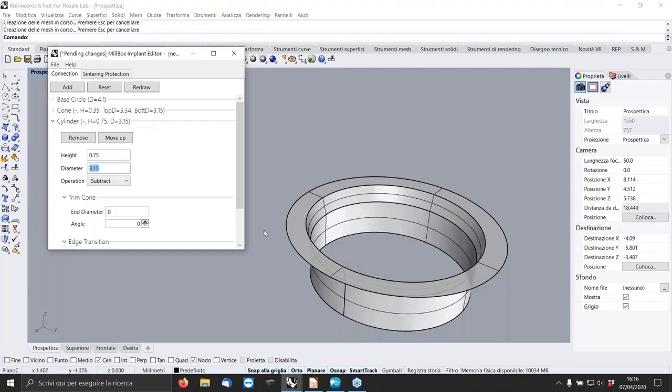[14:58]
Again, we can add a cylinder. Here we can add the value of the height, 0.75. Here the diameter obviously needs to be the same as the bottom diameter of the cone upstairs. Otherwise, for example, if I put 2.5, that is much smaller than the diameter, we have this kind of connection, okay? But if the surface needs to be continuous between the cylinder and the cone, they have to have the same diameter. Okay.
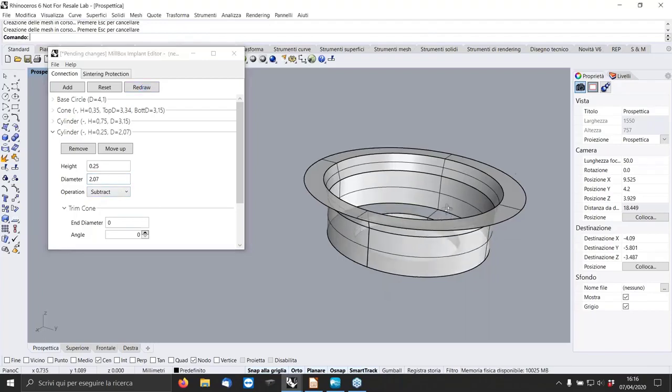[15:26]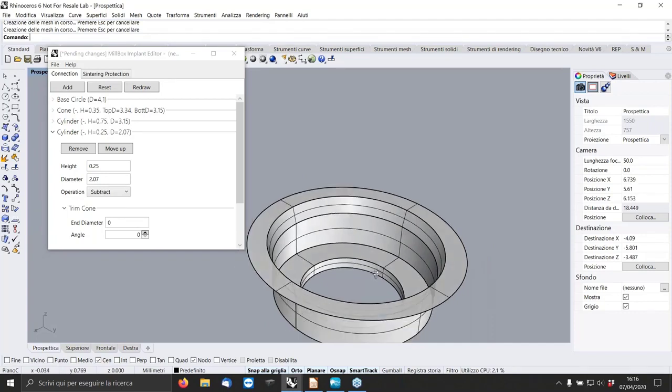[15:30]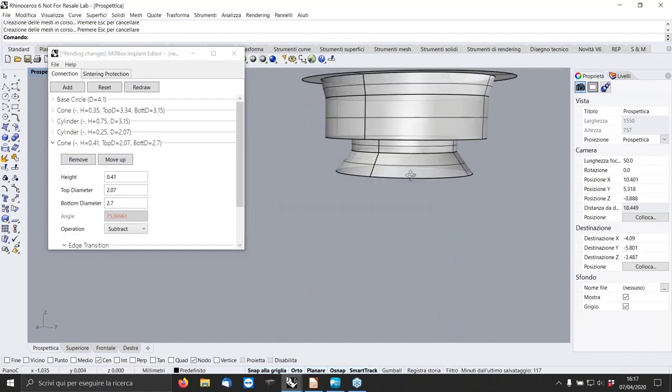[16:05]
Now we have to add the hole for the screw. So it is a cylinder again. The height is 0.25, sorry. Diameter is 2.07, and again subtraction, redraw. Automatically, the software designs a flat surface at the bottom of the implant and a cylinder. We now add a cone that is the seat of the screw. The height is 0.41. Top diameter is the same diameter as the hole, so 2.07. Bottom diameter is 2.7. That is the dimension of the screw head. And redraw. Here it is.
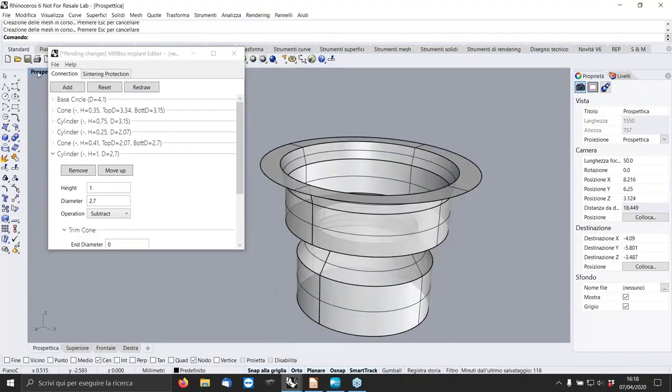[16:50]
The last feature we need is a cylinder for the diameter of the screw head. So we go here in Add, Cylinder, for example, 1 millimeter. The dimension doesn't matter in this case, it is the last part of the implant. It is just a few millimeters, so that MillBox, after we import the connection, can recognize the seat of the screw head, in this case 2.7. That's it. This is our first connection.
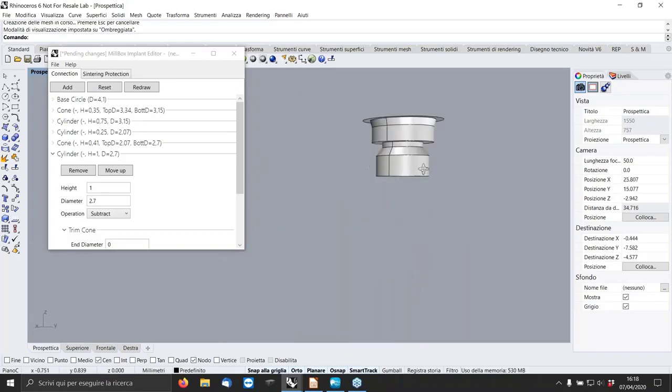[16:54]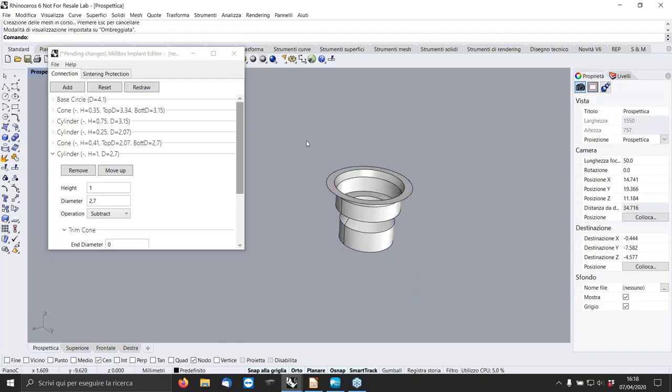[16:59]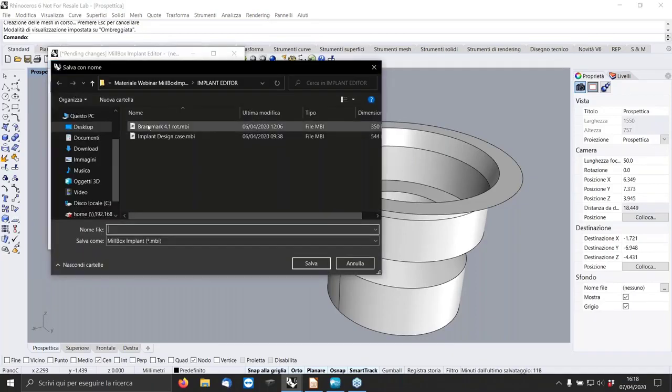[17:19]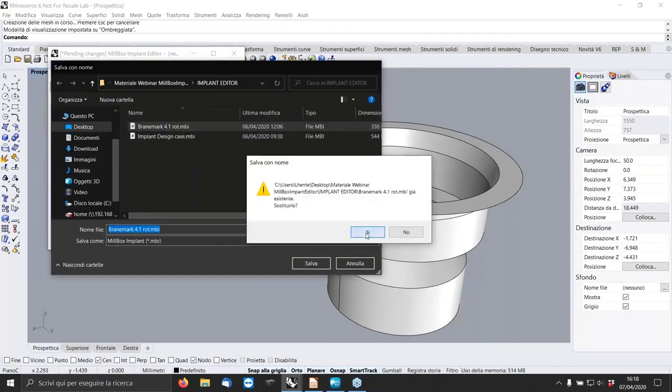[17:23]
It's important we can save this one, and in a second moment we can modify, or better, copy, modify for a different size of connection, and save again. So you can increase day by day your library. So let's say save rotational 1.
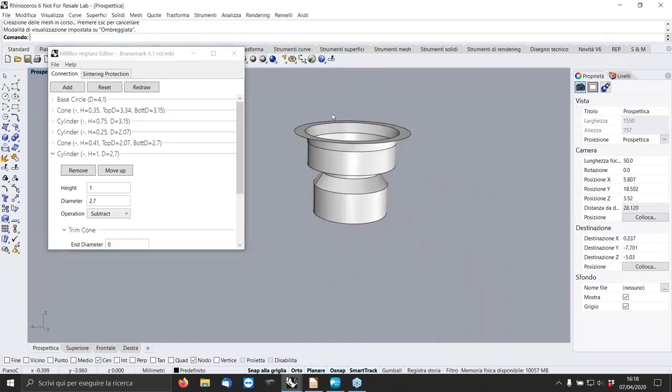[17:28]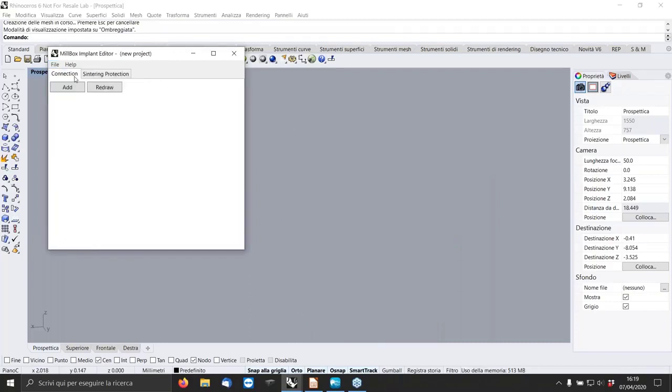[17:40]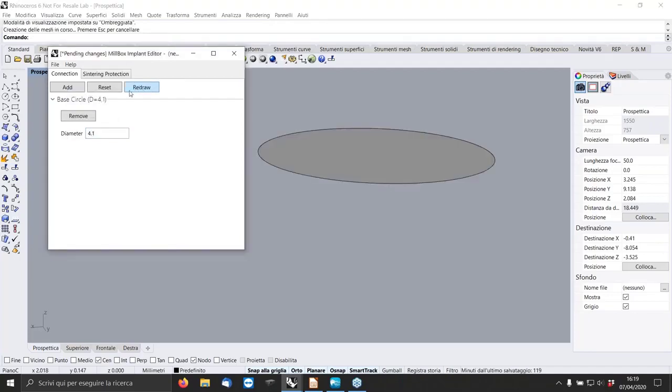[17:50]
Similar to this rotational connection, now we are going to realize a Nobel Biocare Brånemark 4.1 anti-rotational. So we can add a new one. As usual, we start from the base circle. As before is 4.1. We add then a little, very short cylinder. Diameter is 3.24. And also in this case, we have to reduce. So go down with the Z.
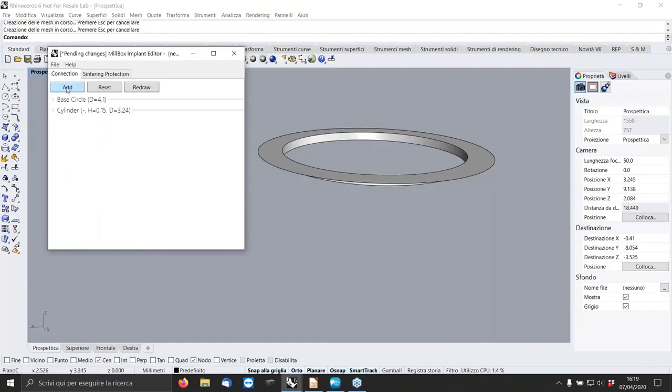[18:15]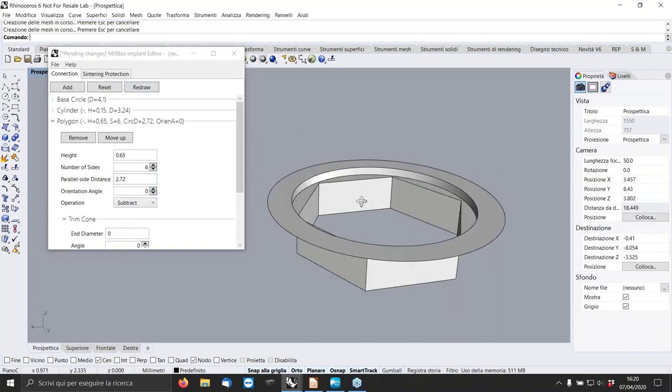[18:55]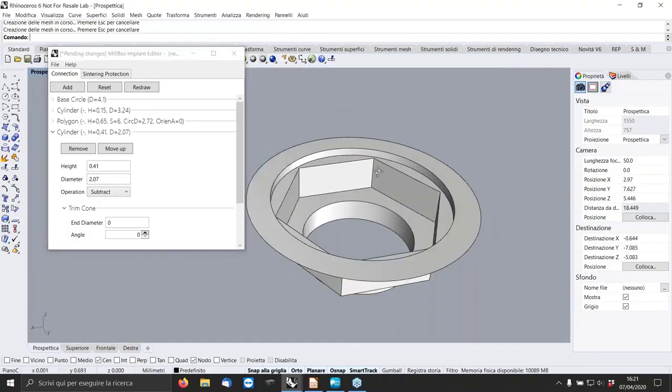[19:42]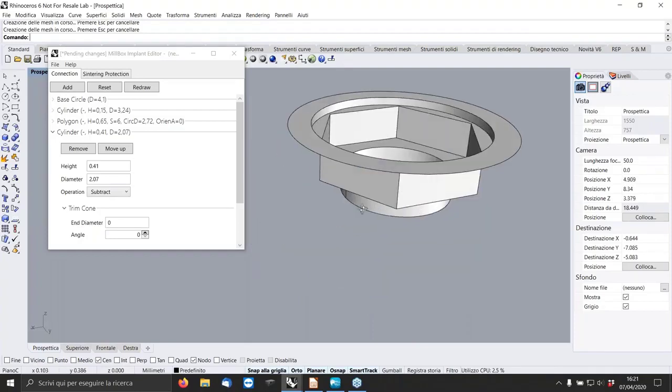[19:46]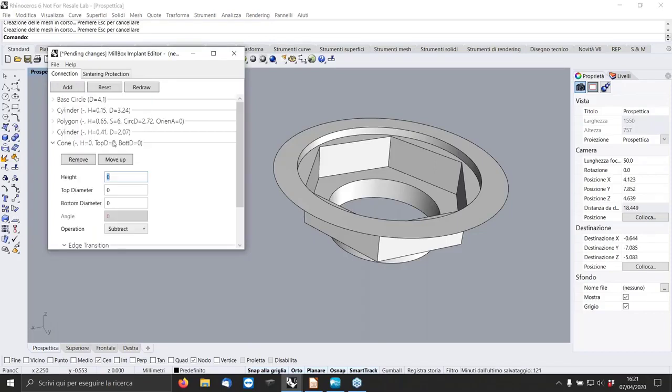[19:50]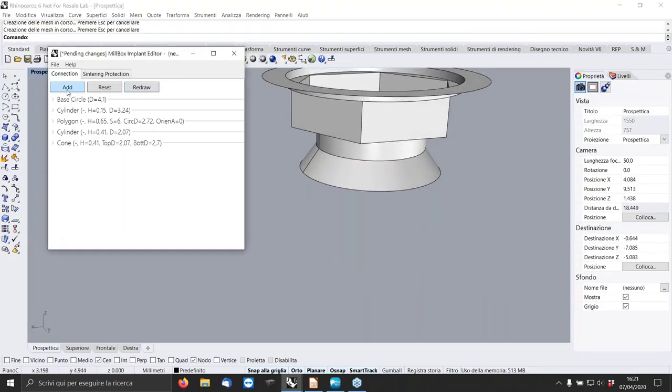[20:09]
Second, I have to add a cylinder for the screw hole. So add a cylinder, height of 0.41, diameter is 2.07, and that's it. Automatically, the software made a flat surface and added a cylinder. Now we can add a cone, that is the seat of the screw, 0.41 of height. Top diameter is 2.07. Bottom diameter is 2.7. Redraw. That's it. We can add the last feature, the cylinder, 8.1, and diameter 2.7.
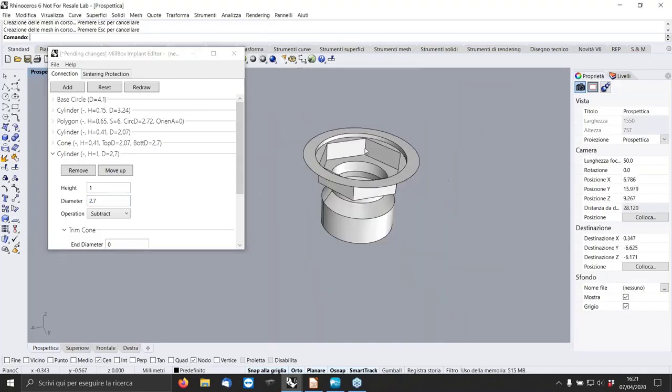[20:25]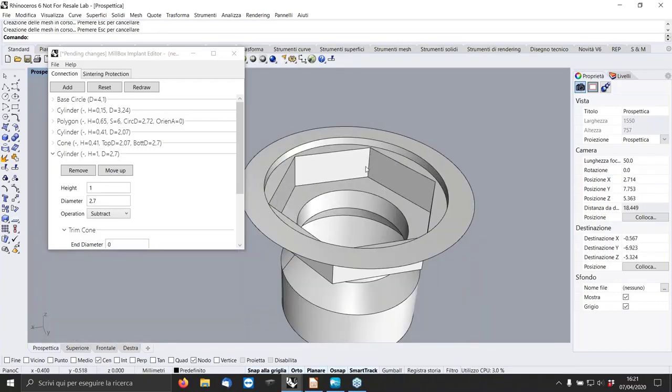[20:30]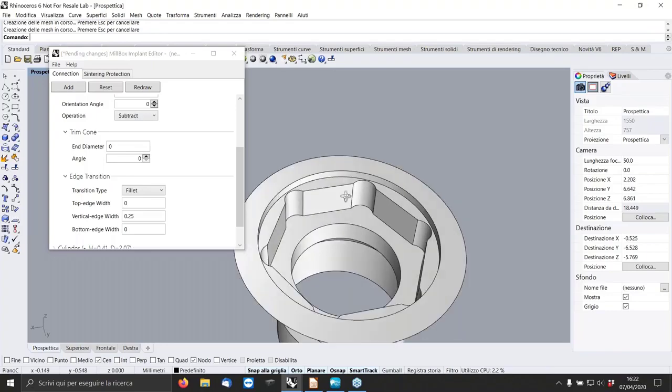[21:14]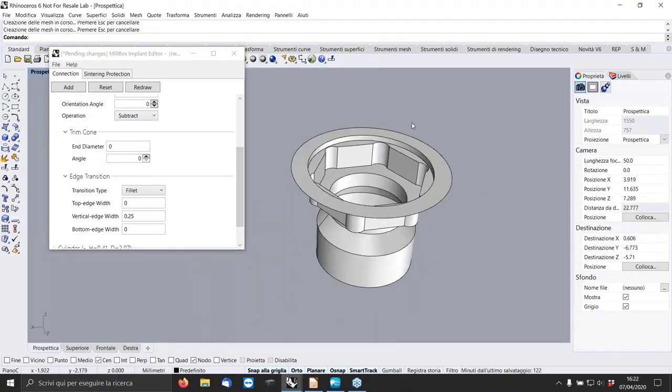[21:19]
That's it. Now, one thing that we didn't see before. Here I have a narrow edge. In this add-on, this software, we can prepare a round corner on the vertical edge. For example, here I go back to polygon. I go a little bit down in edge transition. I select fillet. Here you have two different possibilities, fillet or chamfer. In this case, fillet. And I want to modify only the vertical edge. And I put 0.25. And redraw. That's it. So it's very, very easy to design. But again, it's very important to understand which kind of tools you have on the machine. Possible to have bidimensional design of the connection and so on.
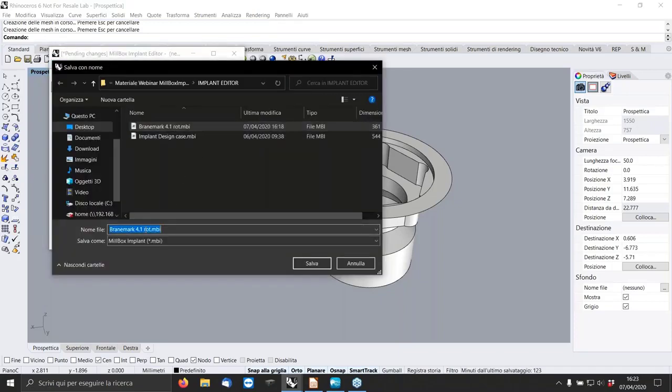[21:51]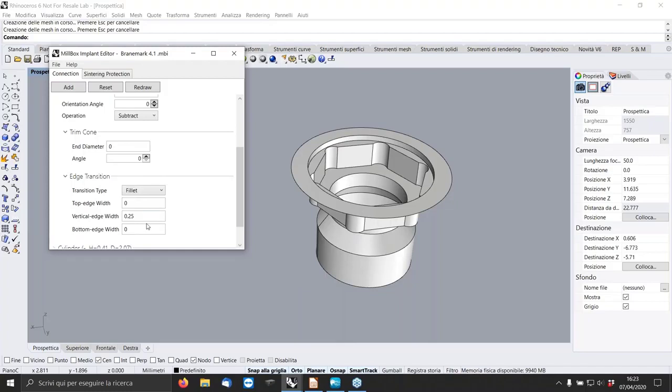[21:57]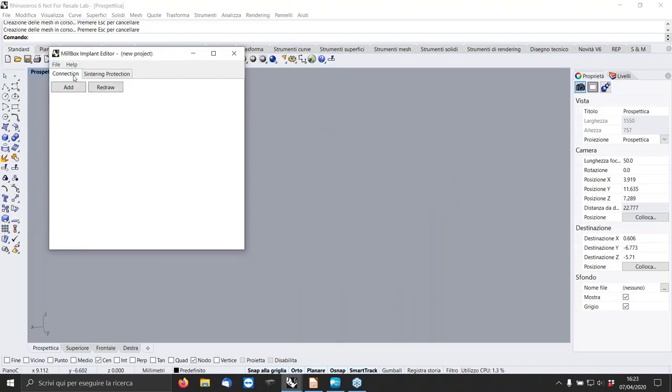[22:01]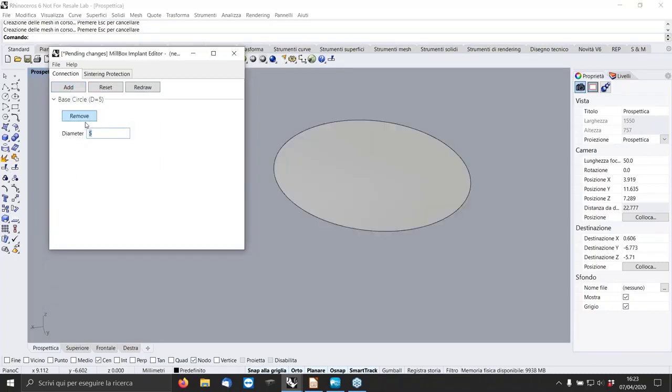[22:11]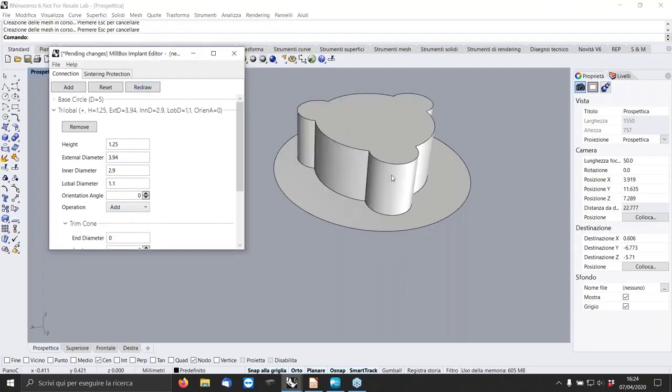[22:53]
Okay, we can now design a new case. So we save this one, save as. Okay, and we are going to design a new connection. In this case, a tri-lobe. So, for example, we add base circle 5. As before, we always start with the base circle. We add a tri-lobe. First one is the height of the tri-lobe, 1.25. The external diameter, 3.94. The inner diameter is 2.9. The lobe diameter is 1.1. And in this case, we add and we draw. So this is 1.1 diameter. This is 2.9. The diameter that touches this and this point is 3.94.
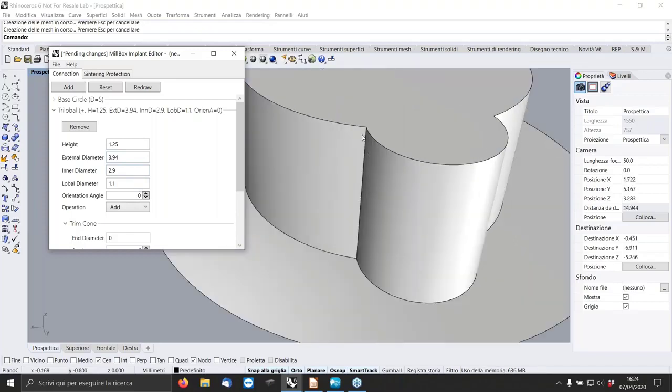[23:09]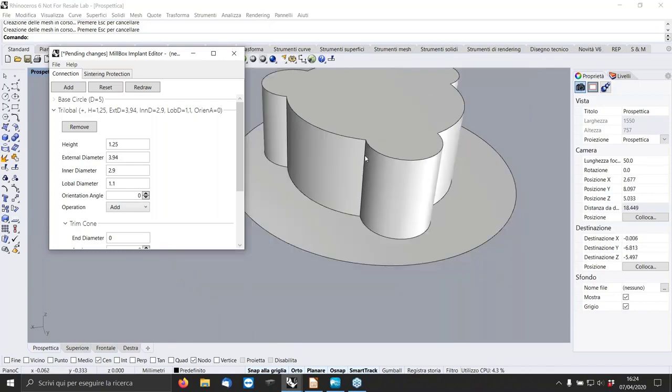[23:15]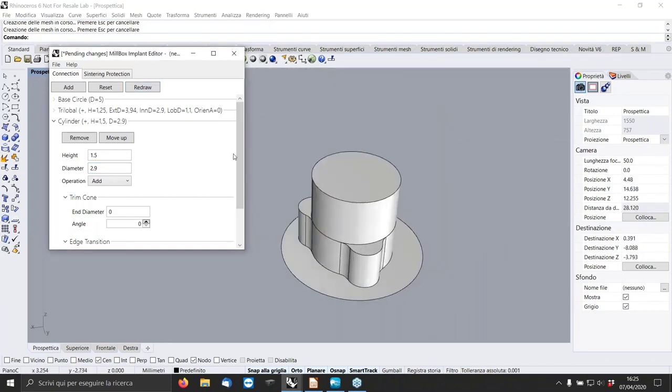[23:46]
It's important to notice that this kind of sharp edge no machine can realize. So we have to add a little fillet. So for example, here is 0.95. That's it. We can add a cylinder, 1.5, diameter 2.9. Again, add, and here we have this one. You can add also a chamfer on the top, 0.2, and redraw. It's better. Okay.
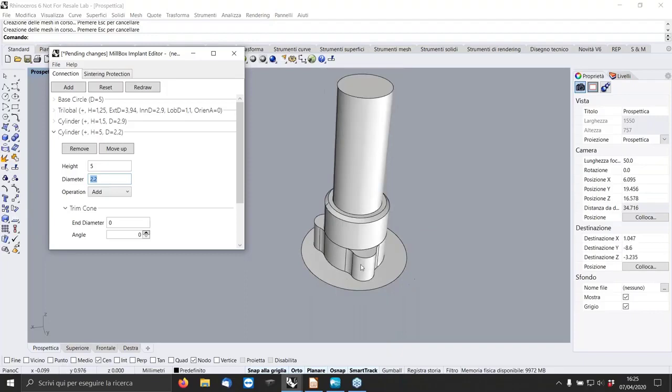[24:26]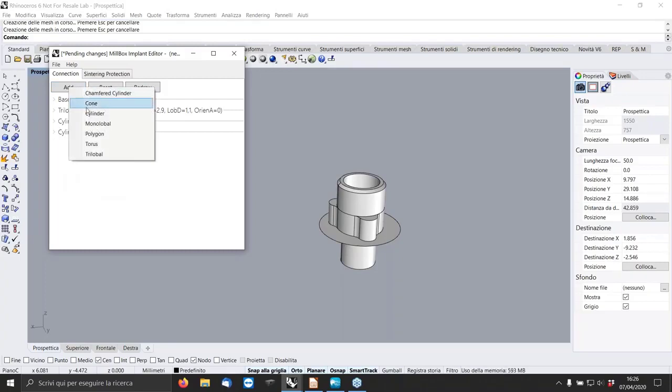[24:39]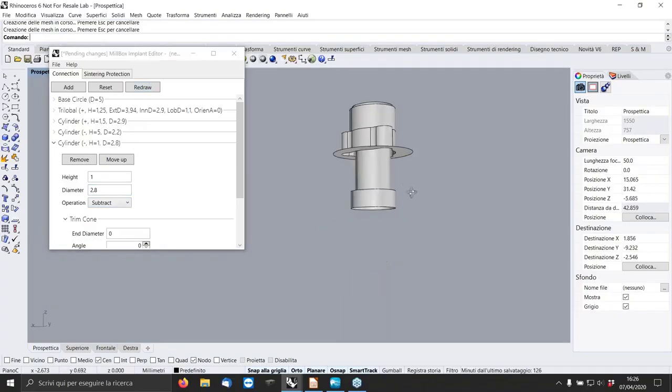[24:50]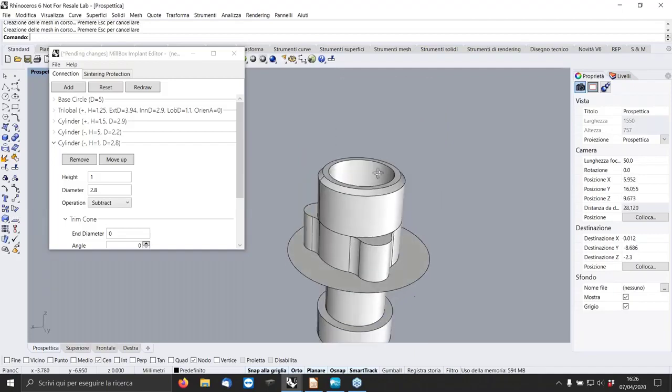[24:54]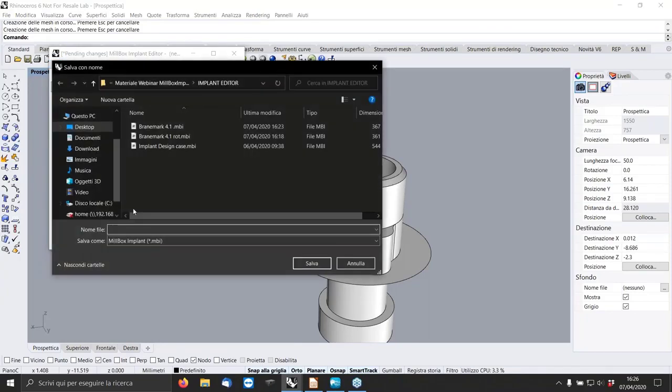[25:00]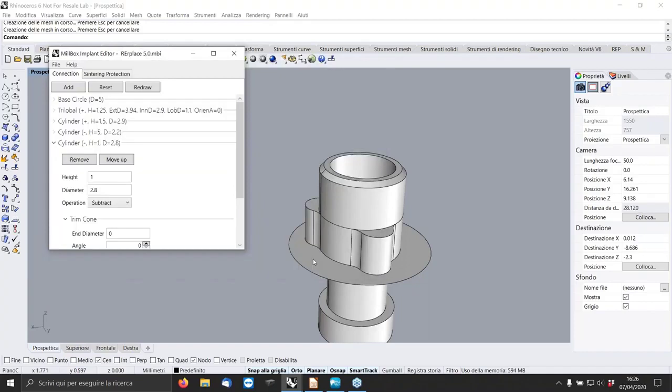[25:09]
Now we have to add the cylinder for the screw. So the screw hole. So we add a cylinder. The dimension in this case is 5 millimeter. Diameter 2.2. Here I give a redraw with add. It's wrong, so I have to change and redraw. It's very easy. Last one, the seat of a head screw, 1 millimeter and 2.8. Again, subtract, okay. And that's it. This is my new connection. We can save, and replace 5.0. Okay.
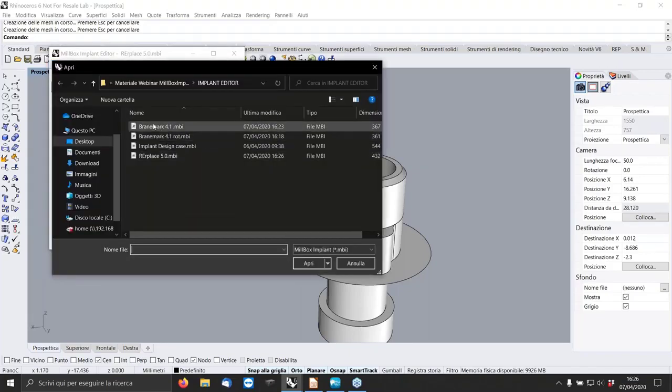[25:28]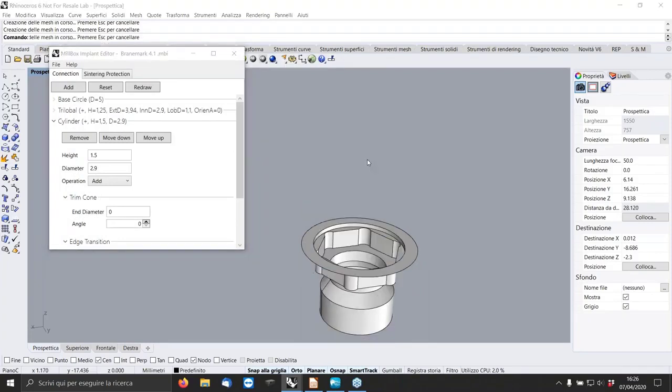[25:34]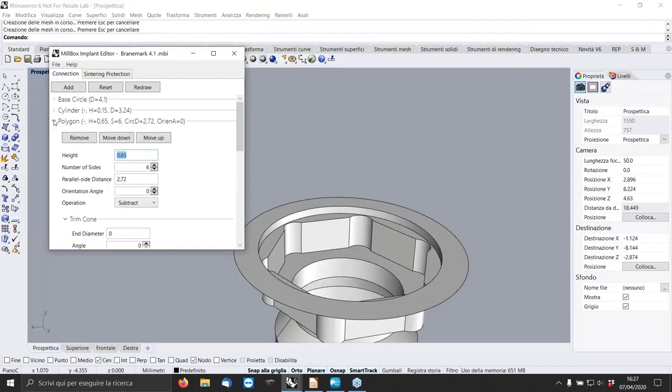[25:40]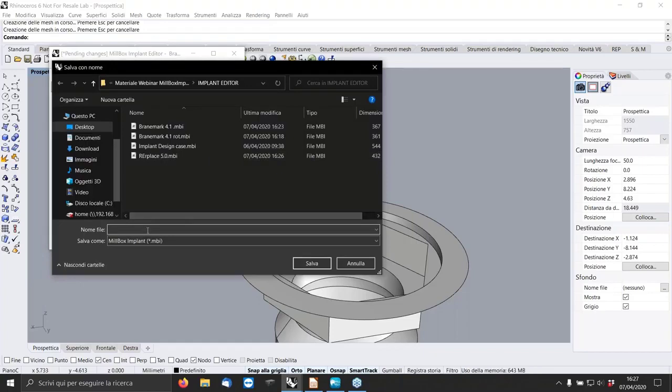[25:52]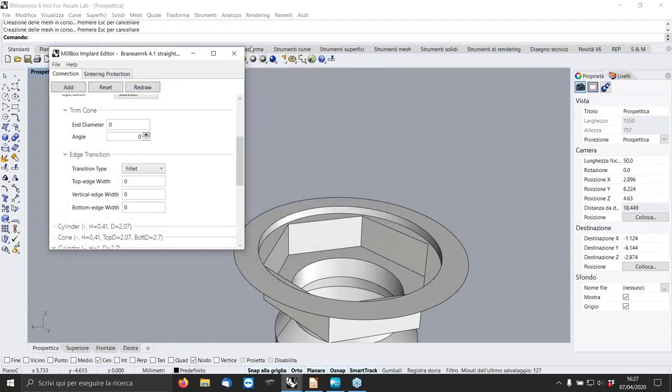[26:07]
So it's very easy to design and eventually to modify. For example, now I want to modify the Brånemark I already designed. So I go here, open this one. Okay, and now I don't want this type of edge. So I go back here in polygon, go in fillet transition, reset this one, redraw, and save again with a different name. So I can use it for a different customer, for example, 4.1 straight. That's it.
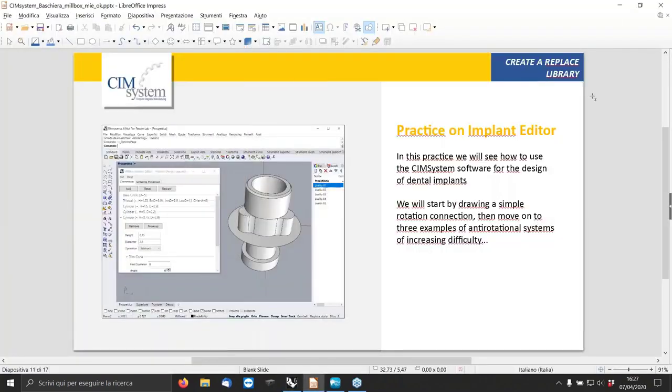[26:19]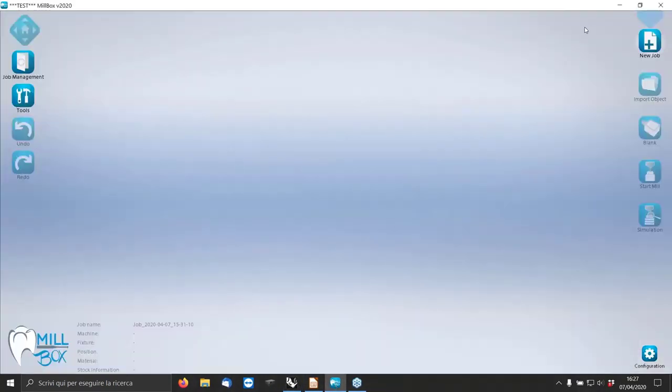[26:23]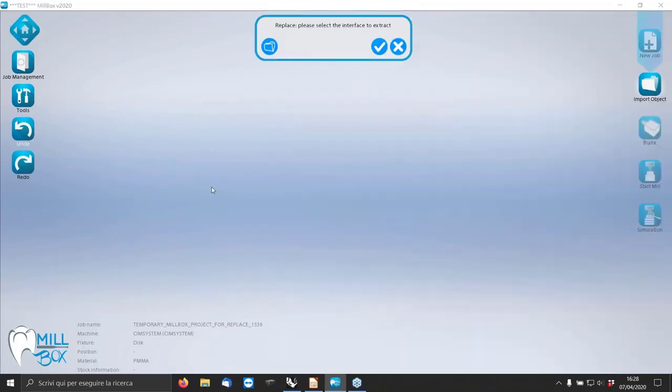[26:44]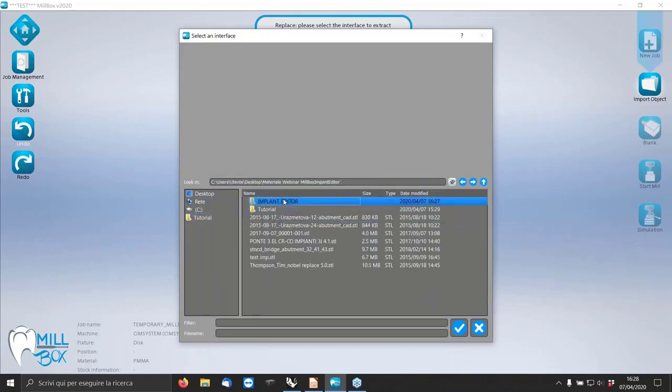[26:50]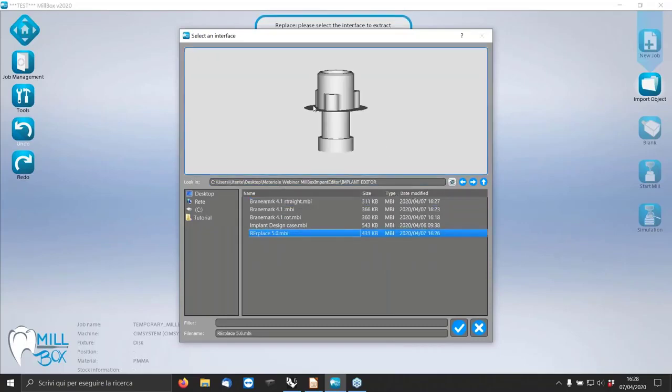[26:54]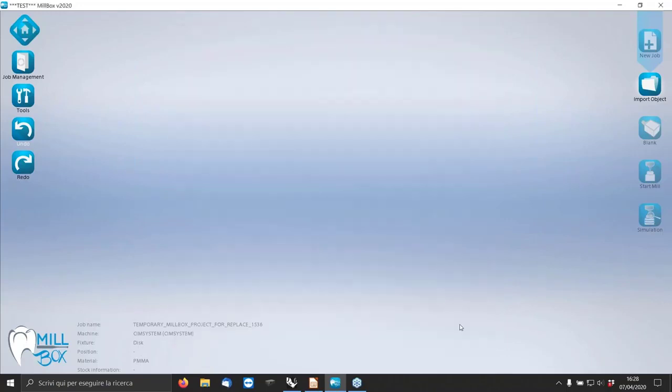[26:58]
Okay, so now we have to go on MillBox. So we can close this one and go in inside MillBox. Here, how can I import this kind of geometry into the MillBox Implant Editor? Simply, I open a MillBox project, empty project. I go on Tools, and I click Import Interface. Automatically, the software goes inside the Implant Editor. Okay, and I go to select my implant. Click OK.
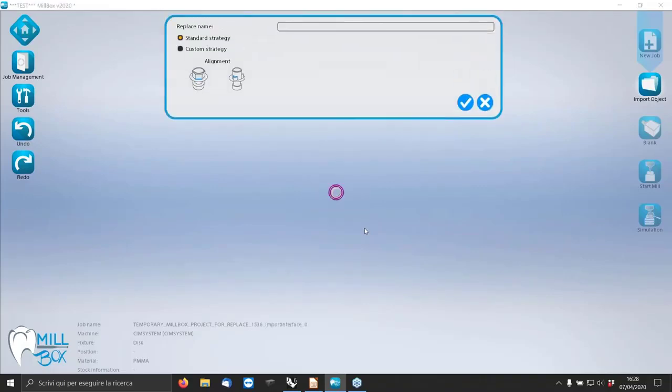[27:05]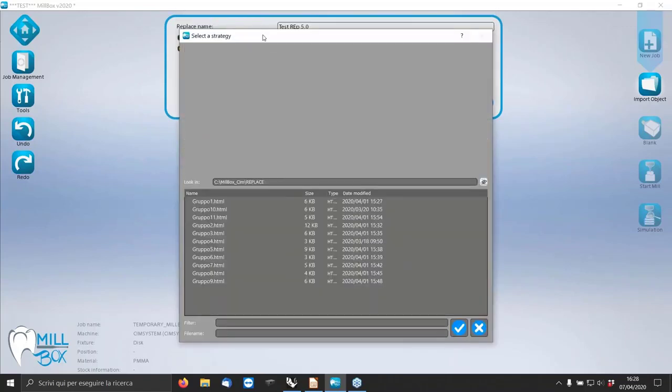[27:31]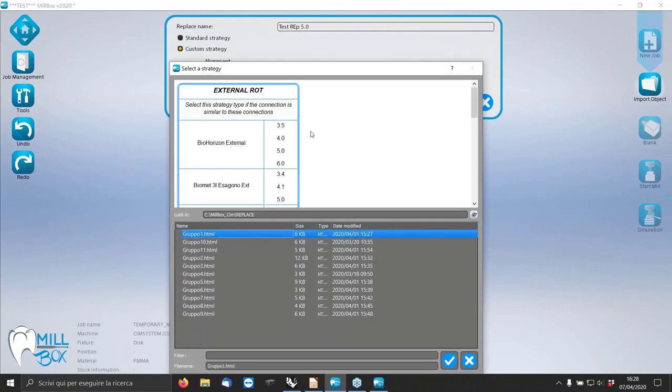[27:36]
And here, I can select. First of all, I have to give a name to this strategy. To this replace. Could be test rep 5.0. I can select the standard strategy or better the custom strategy. So if I click on custom strategy, automatically the software shows me some kind of connection.
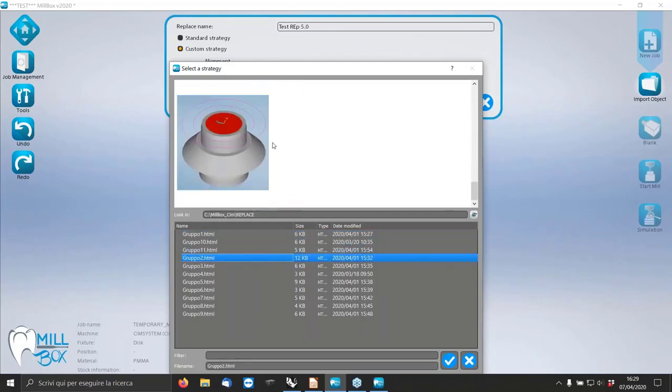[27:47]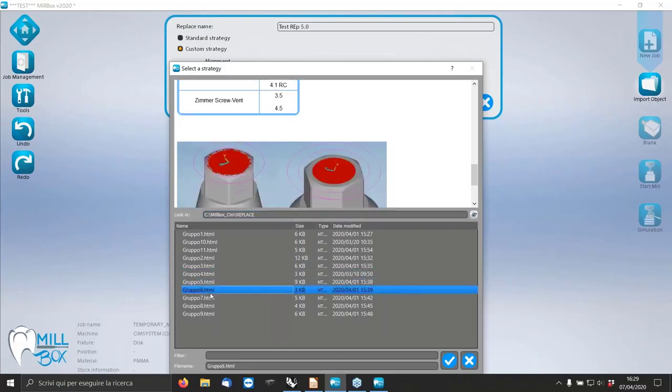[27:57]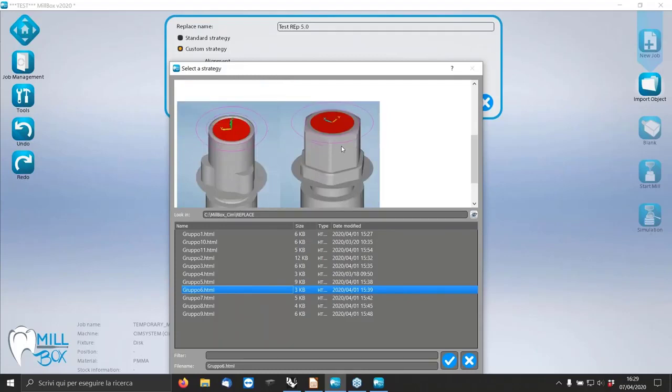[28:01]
For example, the first group is for external rotational connection. The second one for internal rotational, and so on. Automatically, it's a strategy dedicated to this kind of connection. In this case, the connection is this, similar to this. So I can select exactly this one. Okay.
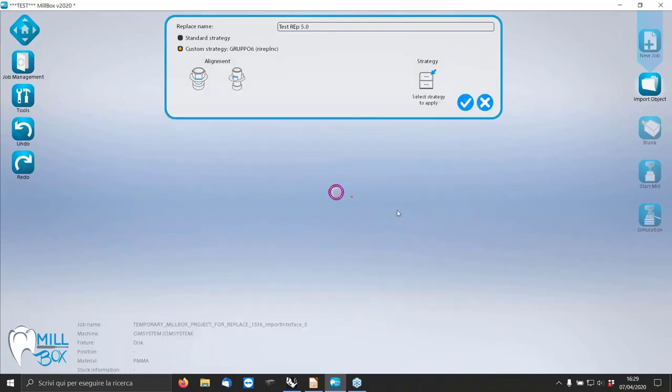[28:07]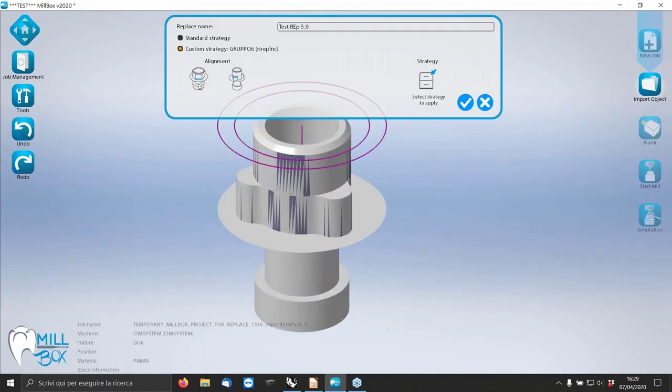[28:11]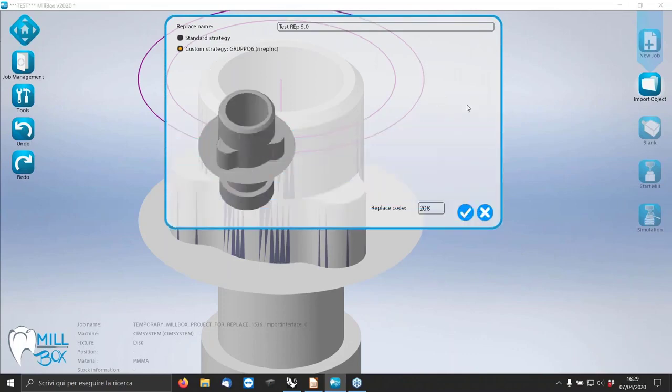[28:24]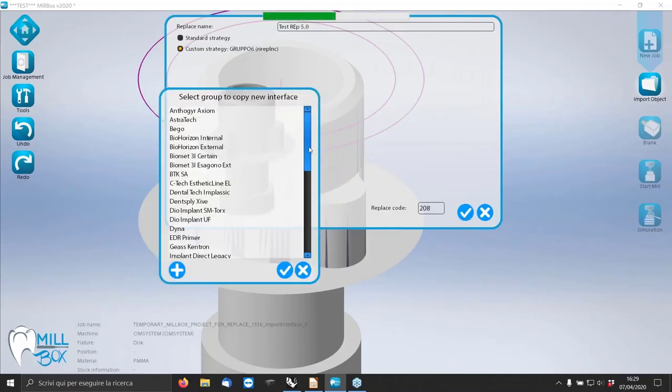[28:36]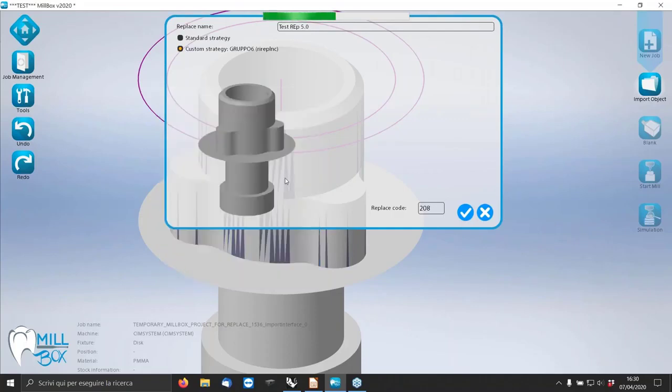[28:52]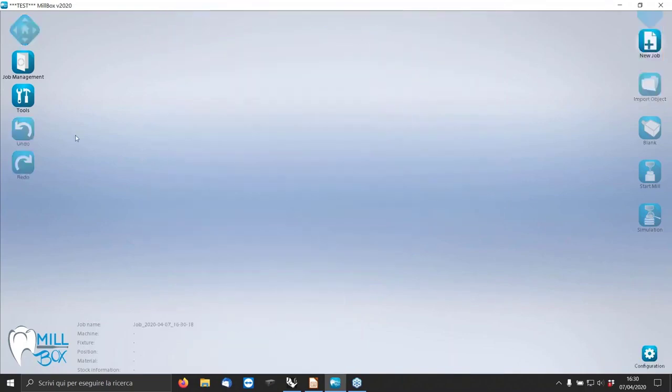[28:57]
Eventually, I have to select an alignment. Could be this one. With the mouse, I go near an edge, and that's it. This one is my new replace. The position inside the database library is 208. That's okay. Here I can select if I can add to a group. In this case, could be a replace or another one. Let's say add a new group. Okay, this one is to import a connection in MillBox.
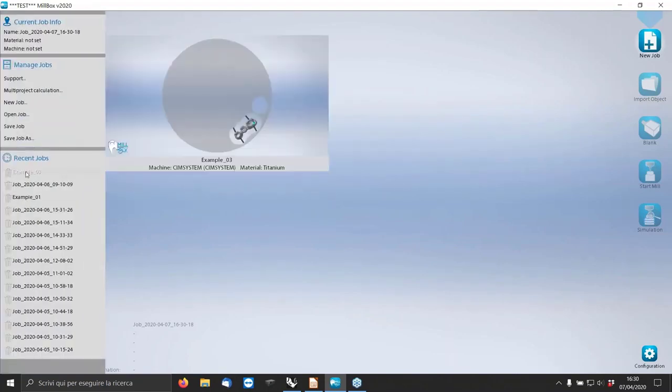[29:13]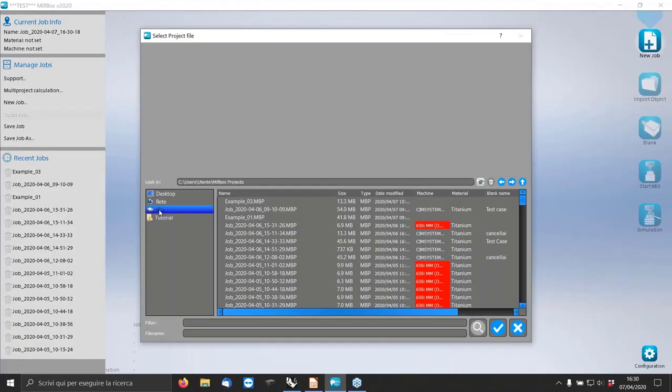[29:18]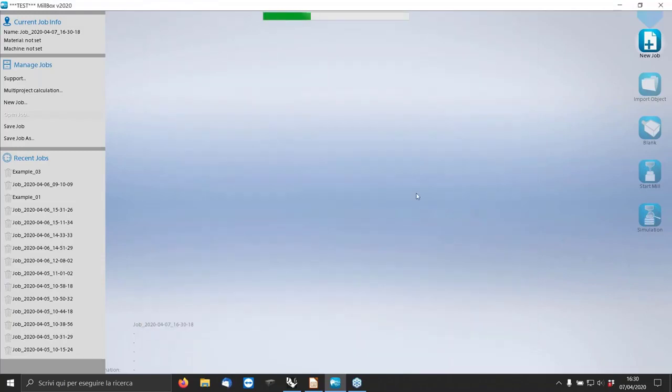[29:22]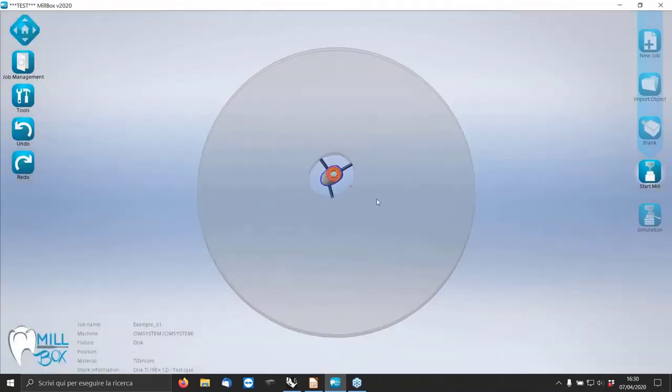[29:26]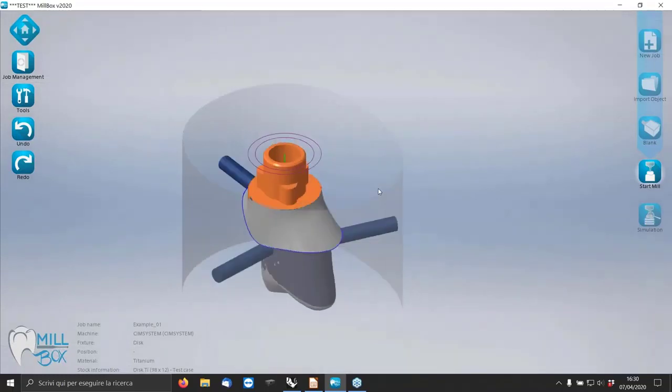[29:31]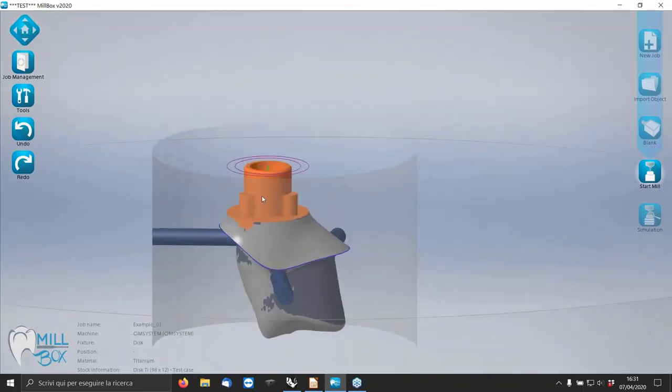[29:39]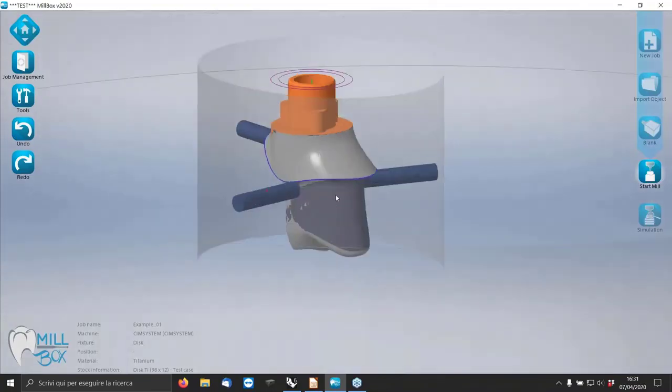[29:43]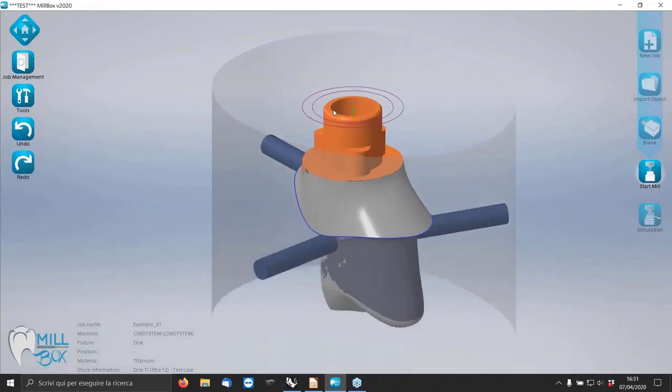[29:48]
Now we can go on and check how to change the connection. So we open a job. Here we change the connection of this kind of implant. So in this case, automatically MillBox detects properly the connection. But I'm not sure about the dimension of the connection because it came from a different customer, and I don't know which kind of CAD software he used for design, and I don't know the connection.
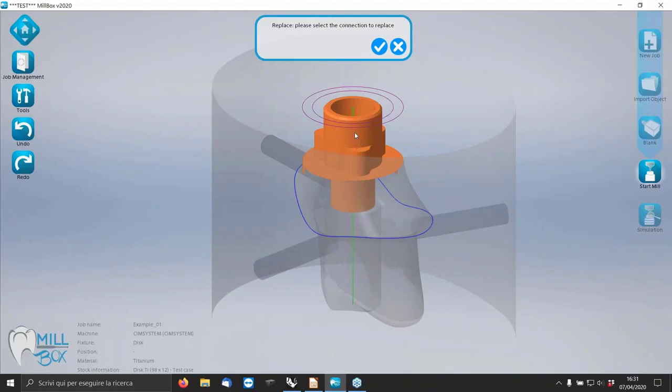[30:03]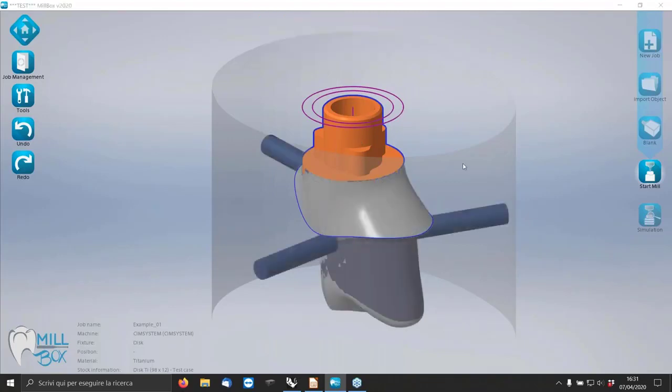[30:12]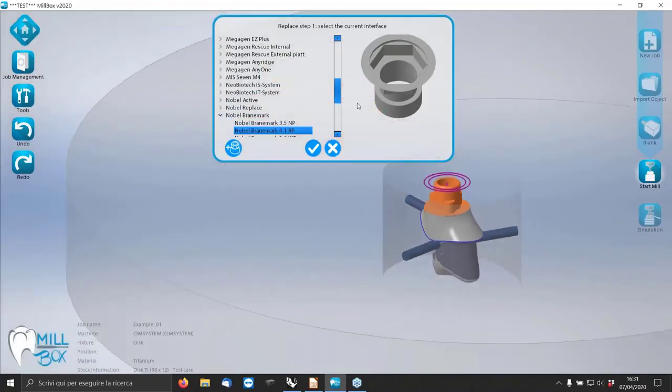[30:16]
So I select Tools, Replace, here I select which connection I want to replace. In this case, this one is the only one in the project. Click OK. Here the software shows me a list of connections I have in my own database. It's not the connection I have in my database, but the type of connection of the abutment. So this one is a Replace 5.0. Okay, is this kind of connection.
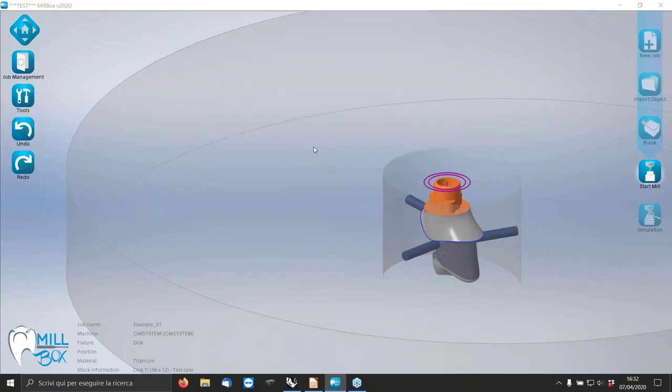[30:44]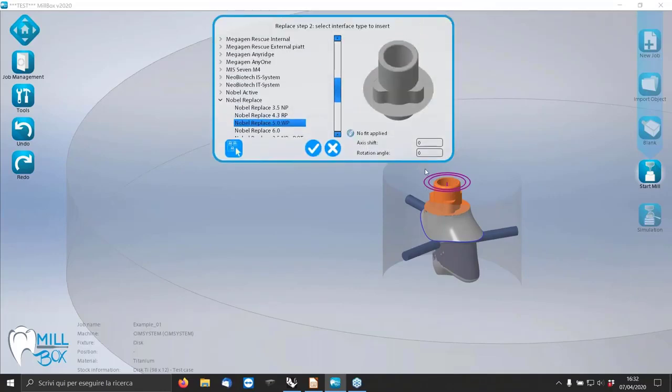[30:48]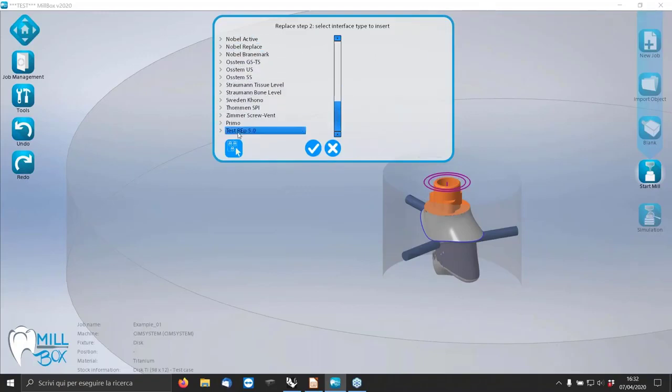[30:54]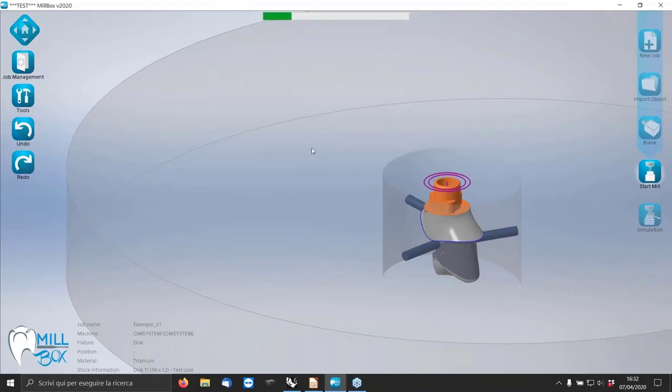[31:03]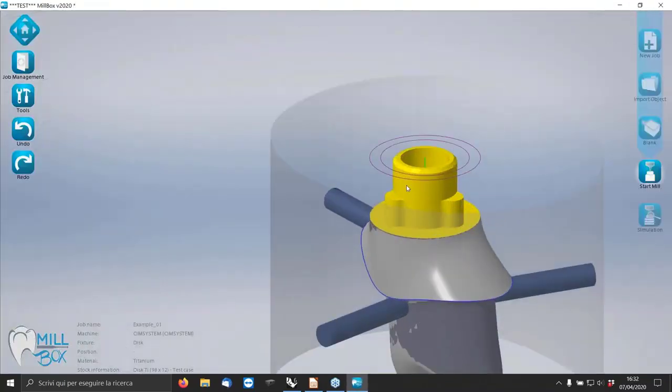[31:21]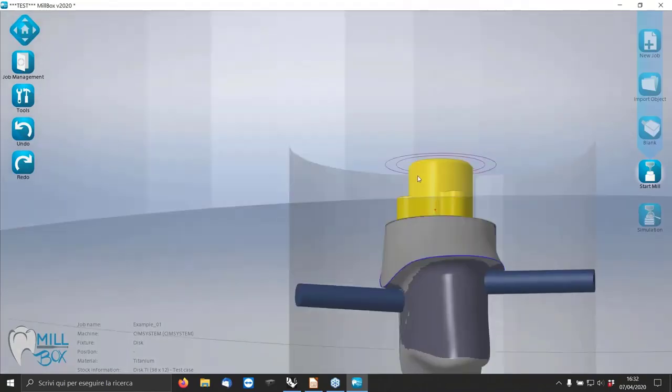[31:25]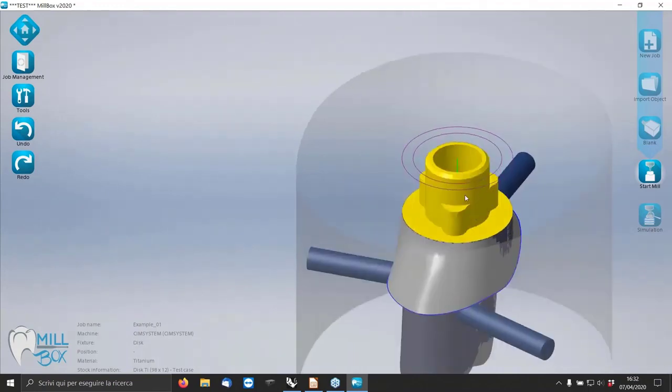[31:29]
And second phase is to select which connection I want to replace it with. In this case, is this one, the one we have designed with MillBox Implant Editor. Simply click OK, and the software is calculating to take off the original interface and put the new one. Here it is. Yellow colored connection means that MillBox already replaced the connection with the one you designed in MillBox Implant Editor. It's very easy, and that's it.
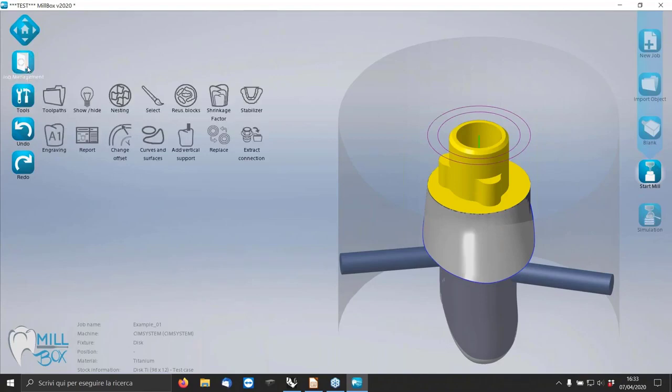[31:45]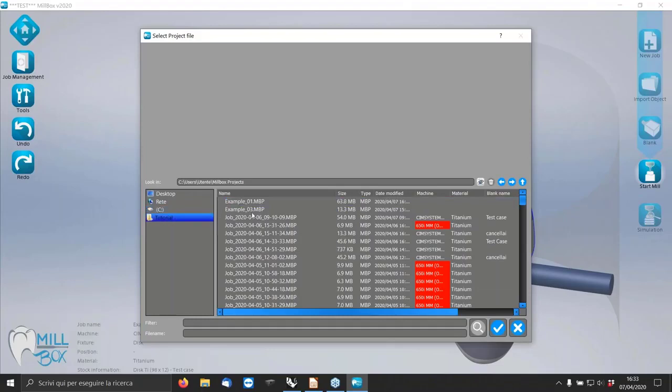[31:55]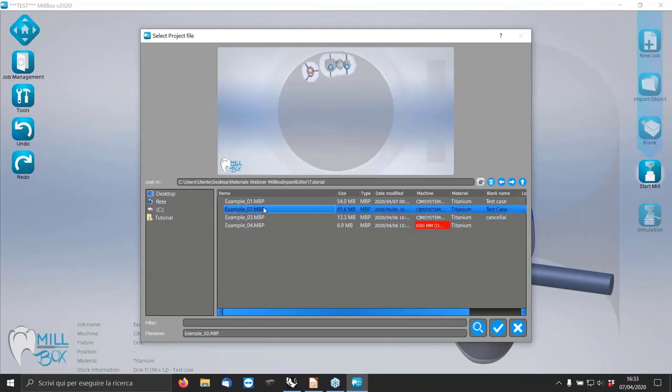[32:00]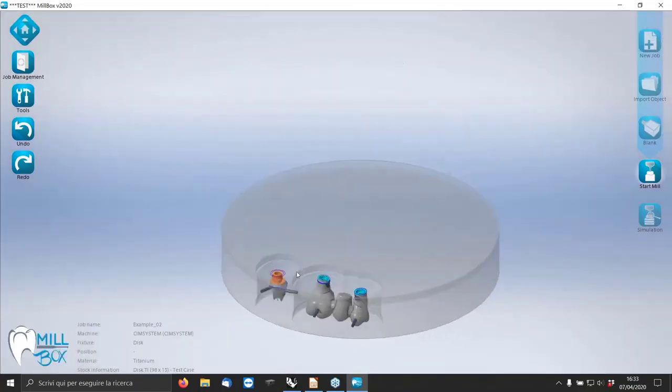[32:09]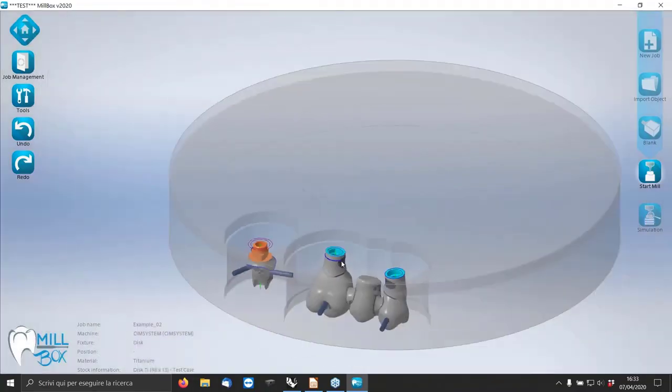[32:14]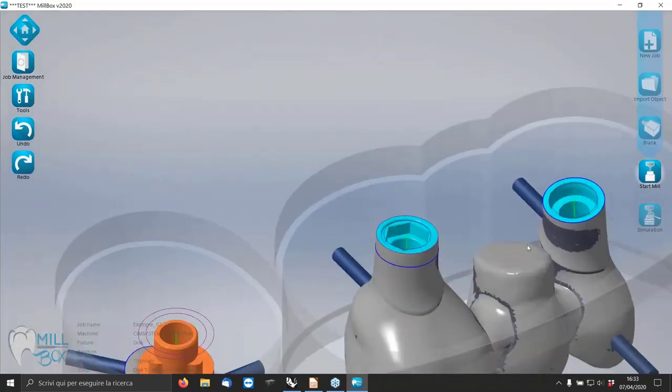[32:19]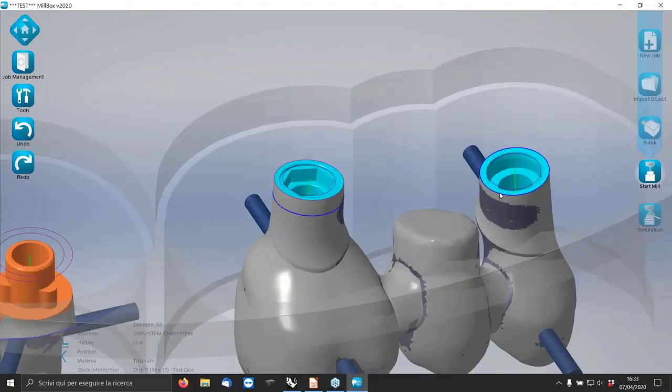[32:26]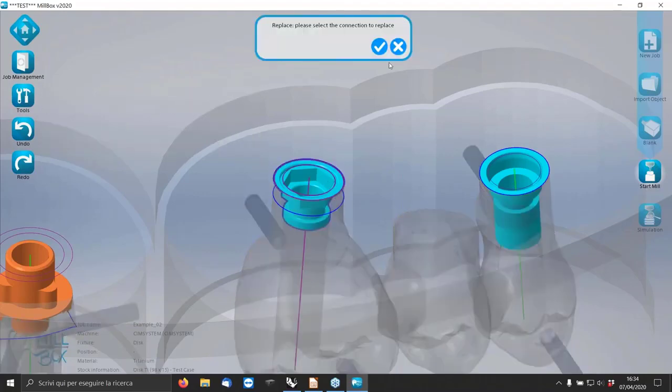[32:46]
In our case, we can see about replace is this one. I go open a new job. Okay. Obviously, you can replace the connection for anti-rotational and non-rotational. But in this case, we have a problem. Normally, we can't use an anti-rotational and a rotational one. I know that we can do it, but normally we can't. So in MillBox, you can replace an anti-rotational with a rotational one. I know these two are the same, Brånemark 4.1. So I can go here, replace this. This is an anti-rotational one, okay?
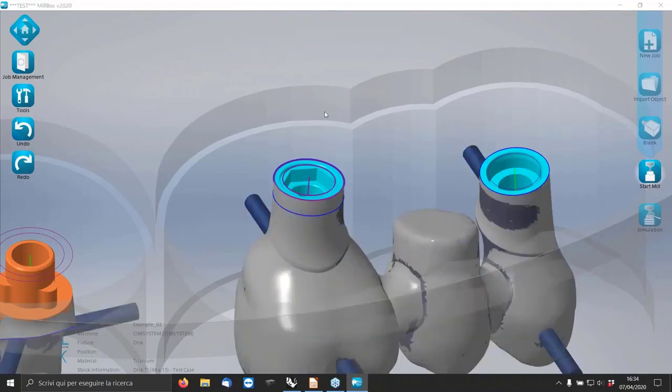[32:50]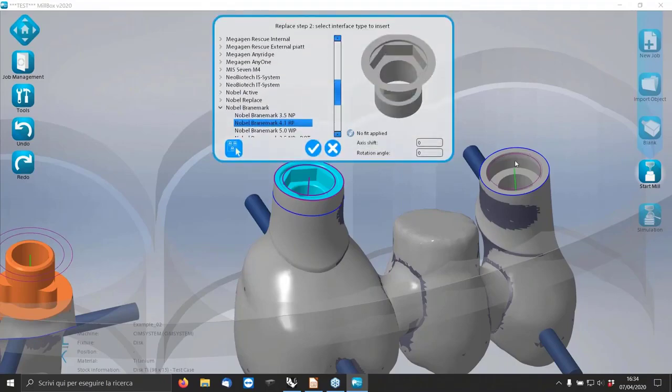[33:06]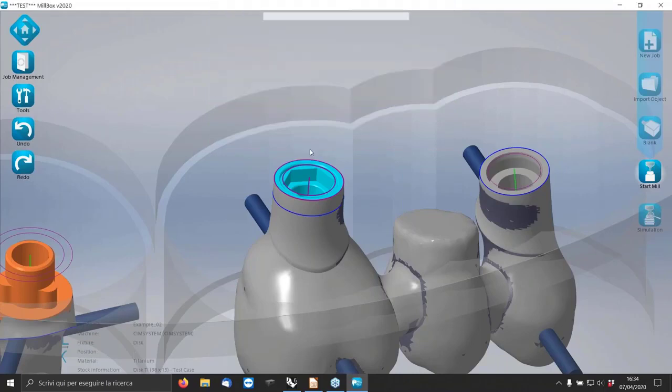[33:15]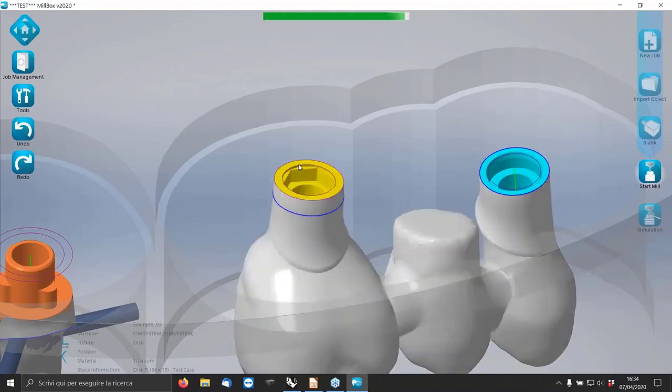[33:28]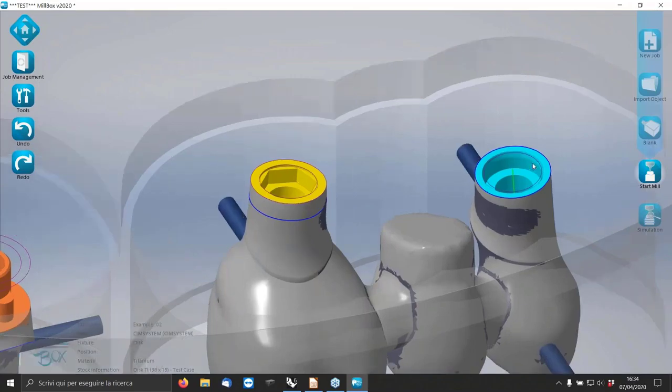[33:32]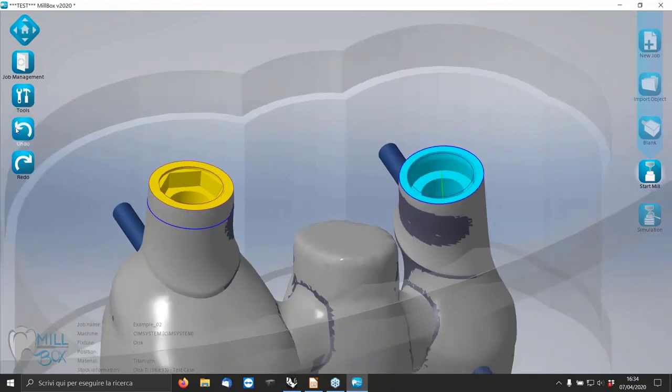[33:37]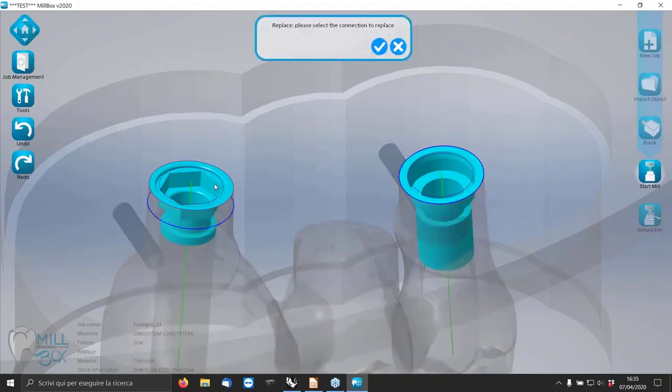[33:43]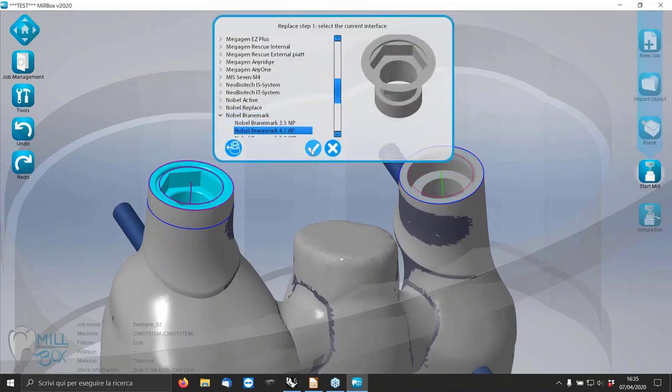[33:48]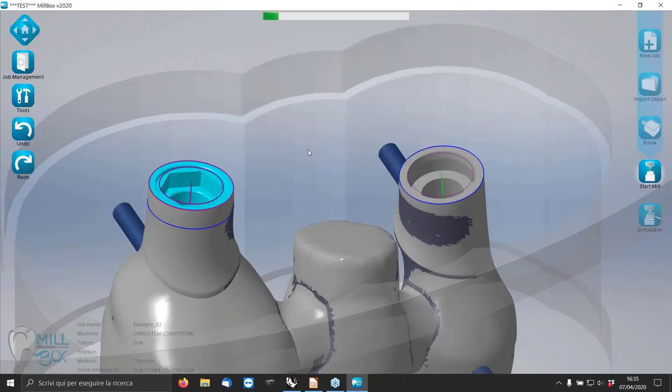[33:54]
As before, here I have to select which kind of connection is on the STL file. Is a 4.1 Brånemark RP. And this one is the connection I want to replace. So the connection I want to insert. Okay. And as we see, automatically detect and draw some curves, axes, etc. Here I replace the same, just an error. I have to replace with a rotational one. Okay, this is an anti-rotational one, and I want to put the rotational. Okay, that's it.
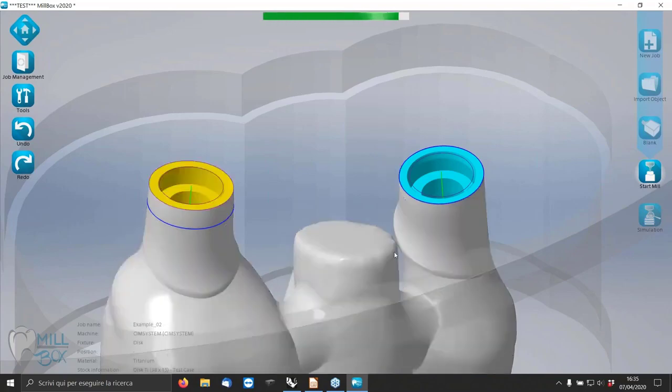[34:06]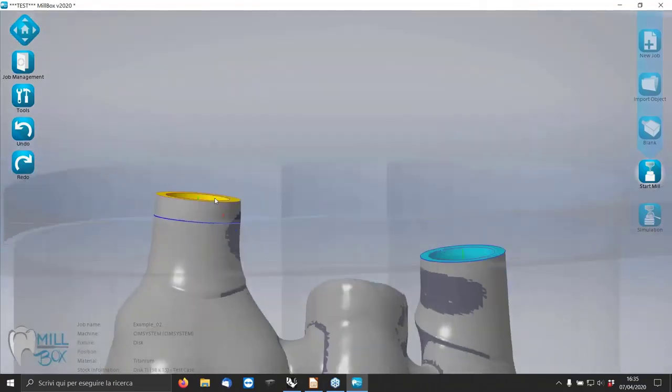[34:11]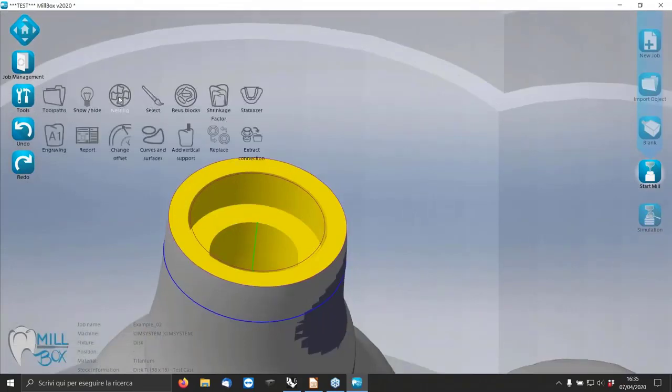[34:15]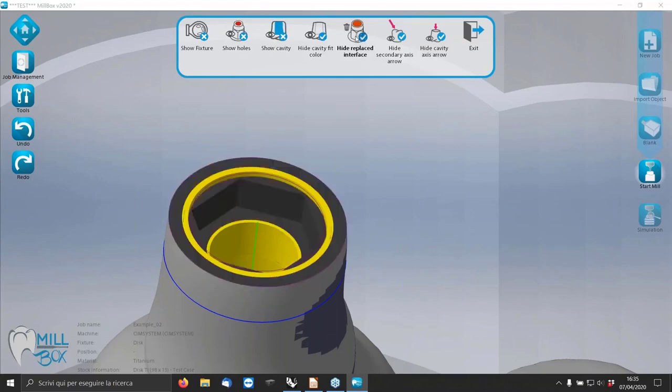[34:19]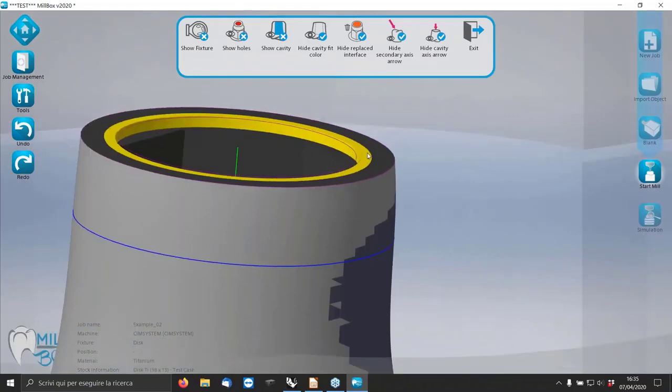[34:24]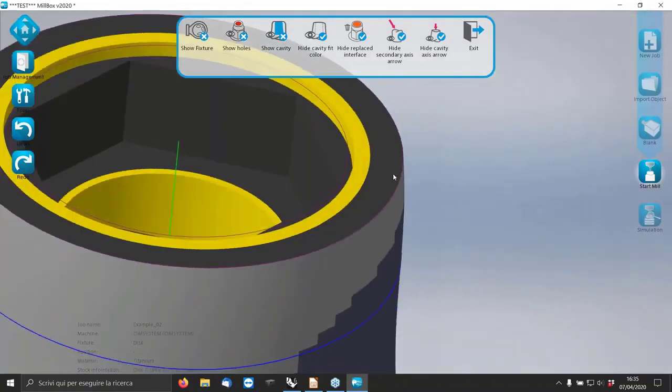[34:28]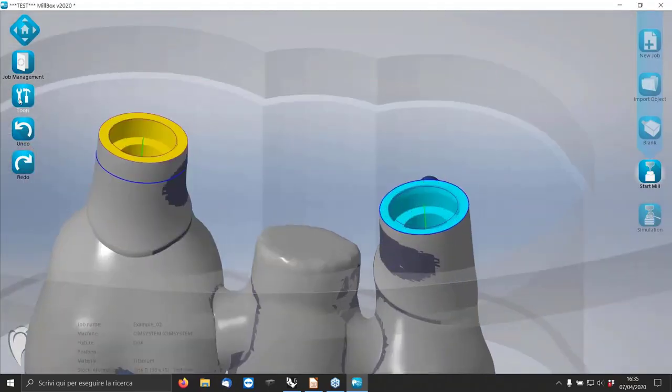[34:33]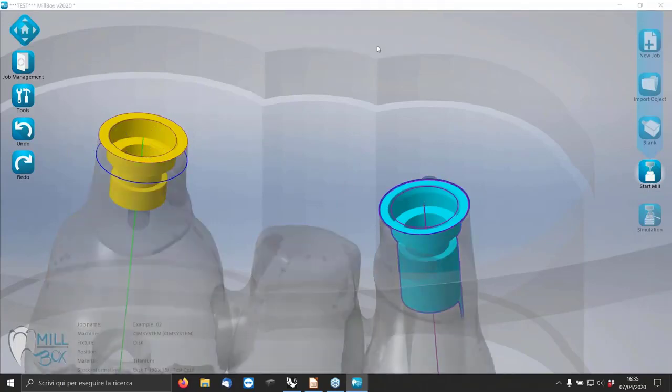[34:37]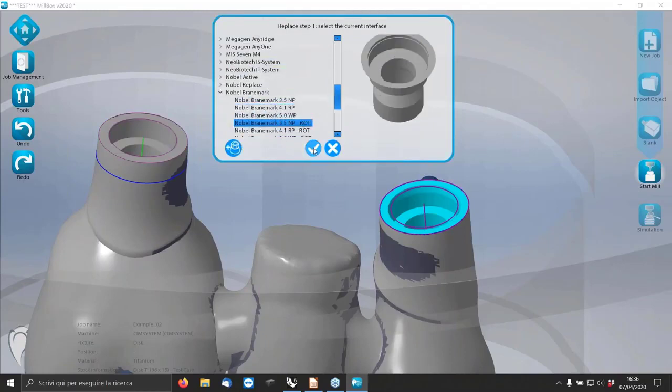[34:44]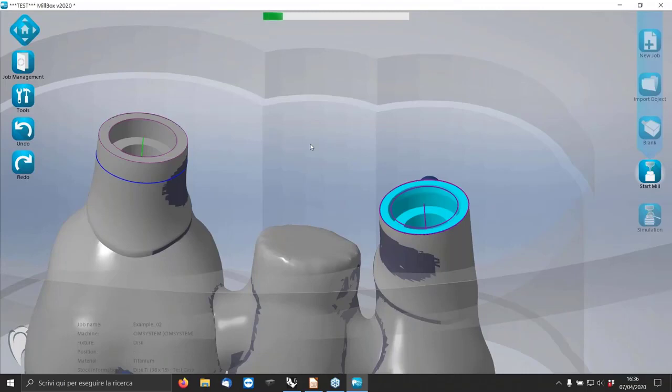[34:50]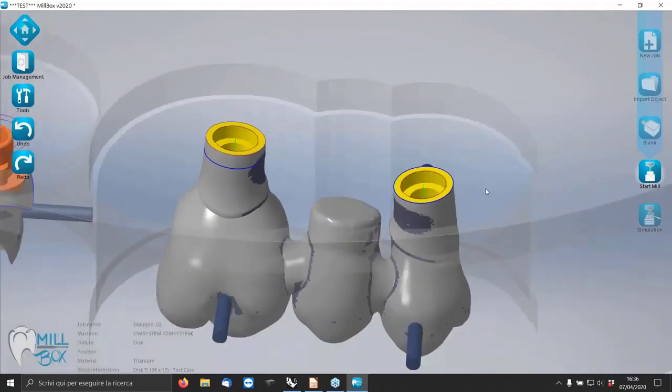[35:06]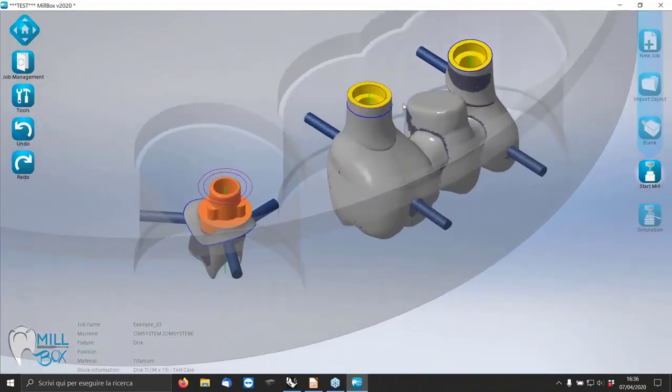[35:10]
Here it is. I can also check and make a comparison between the original one and what I put on. It's exactly on the same plane, so perfect. The same on this side. Replace this one, yeah. In this case, it's a rotational one. Okay. Sorry, here's this one. Okay, and this. Okay. It is useful not only in these cases, but give me some minutes and I show you other important cases where a replace system is very important.
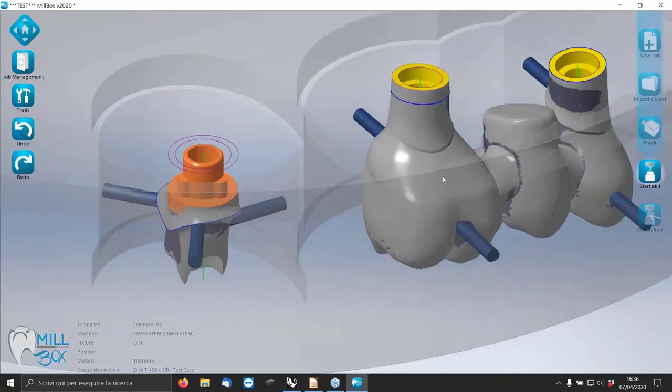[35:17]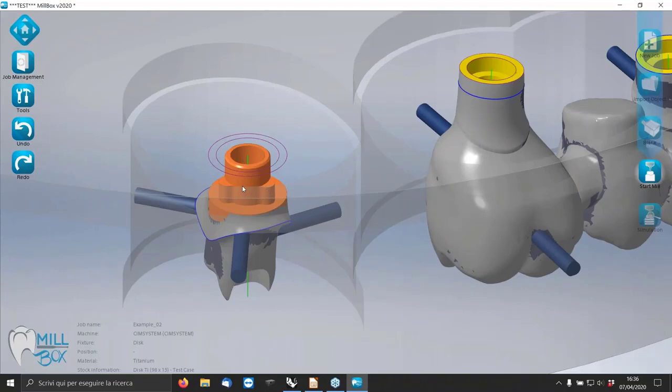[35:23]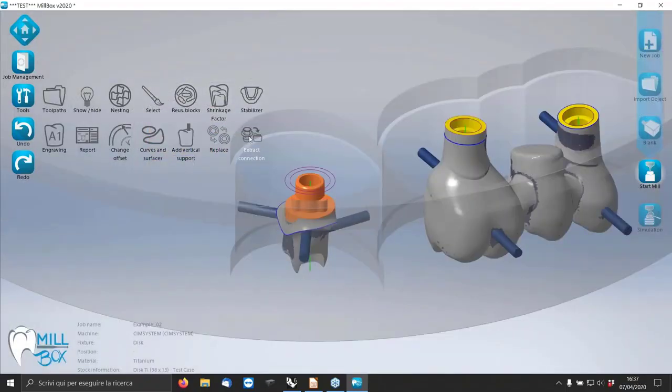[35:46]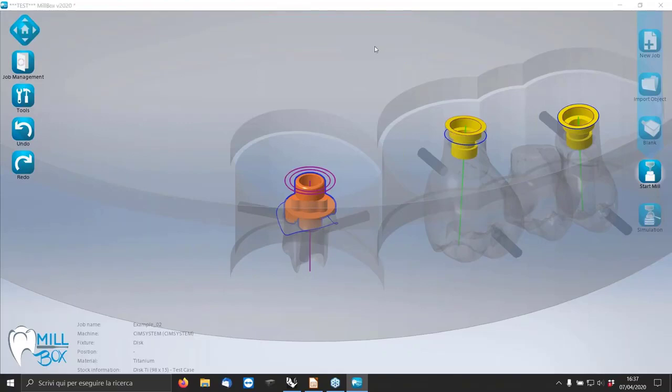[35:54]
Another thing that in MillBox we can do is extract a geometry. For example, I know that my scan software and my CAD software has a very good library for implants. I can decide to select the connection I use in my library for milling. In this case, simply I go to this icon, extract connection. I select this one. Okay.
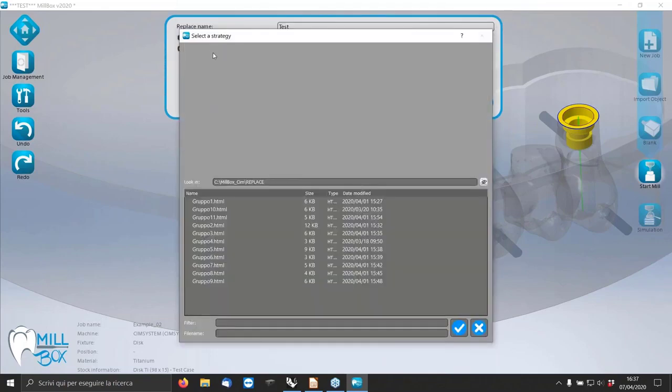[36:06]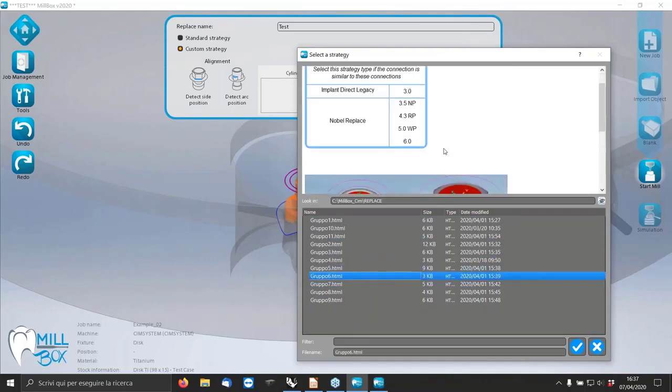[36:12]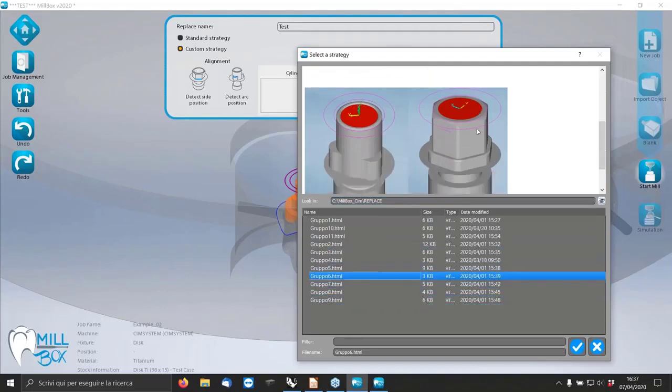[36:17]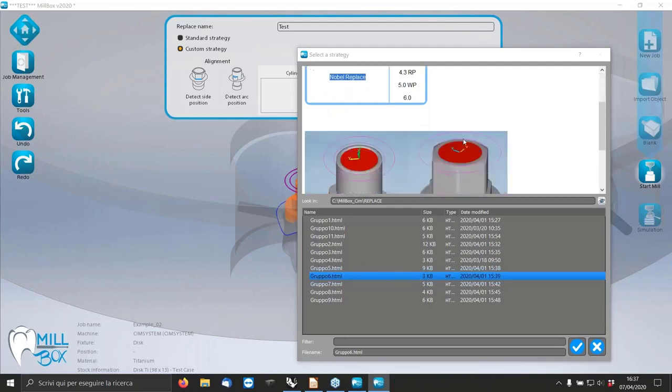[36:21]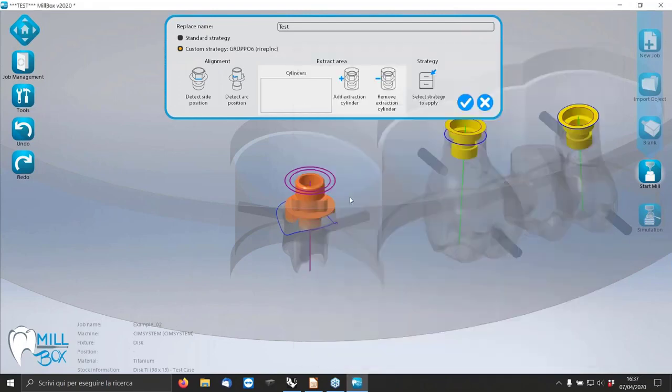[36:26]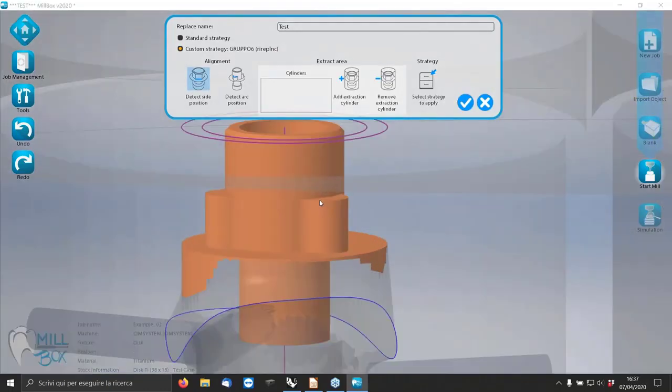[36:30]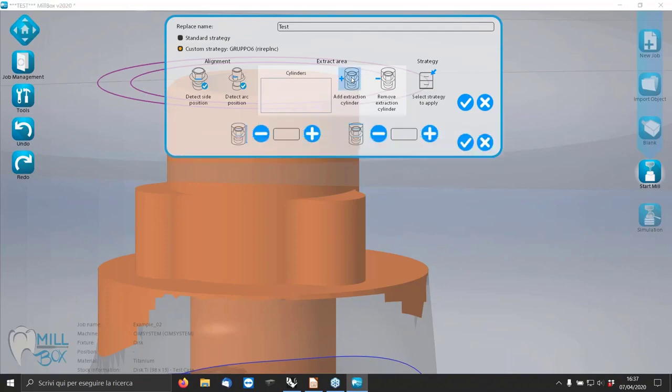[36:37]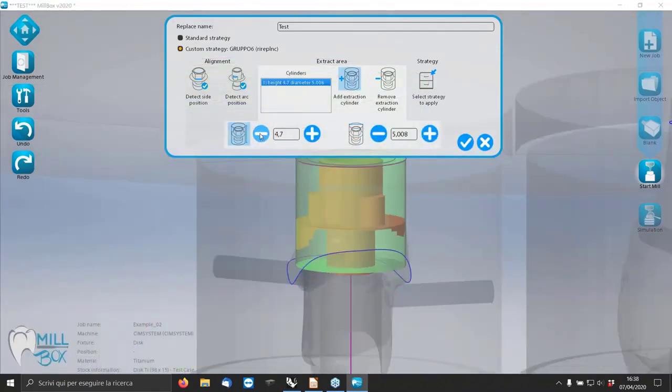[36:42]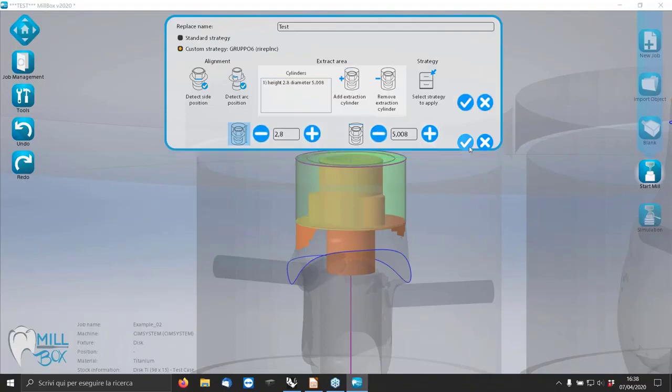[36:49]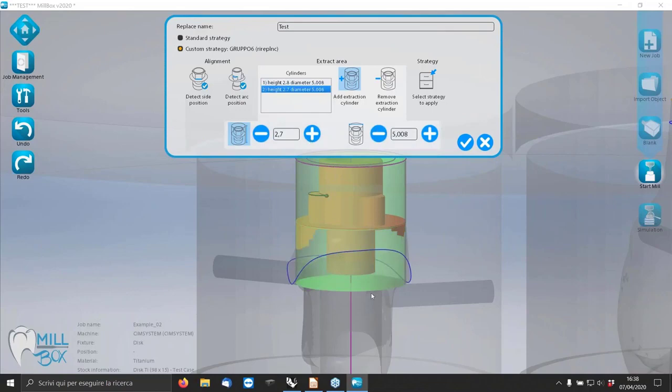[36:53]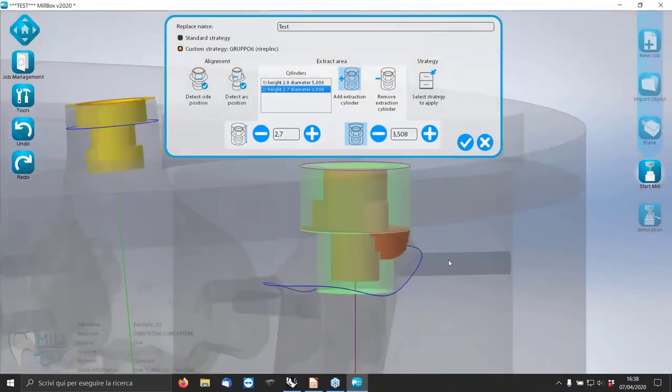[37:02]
I can give it a name. Also in this case, I select a strategy, a dedicated strategy. Okay. All these strategies are divided by type of connection, not by the name of connection, but kind of connection. Okay. More, I can give a reference curve for the face, and I can add a cylinder for the extraction. Here I can select smaller. Okay. And add a second cylinder for the part of the screw. So I can change the dimension. Okay.
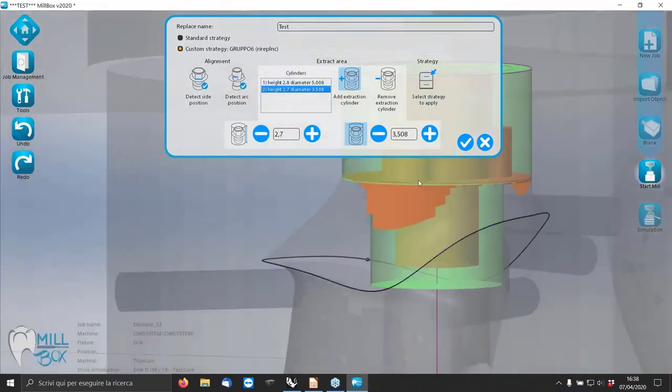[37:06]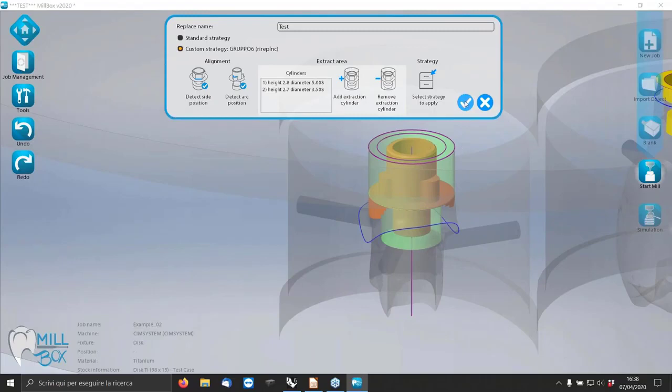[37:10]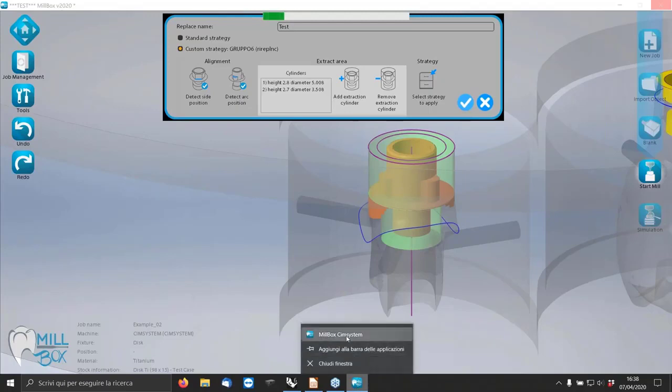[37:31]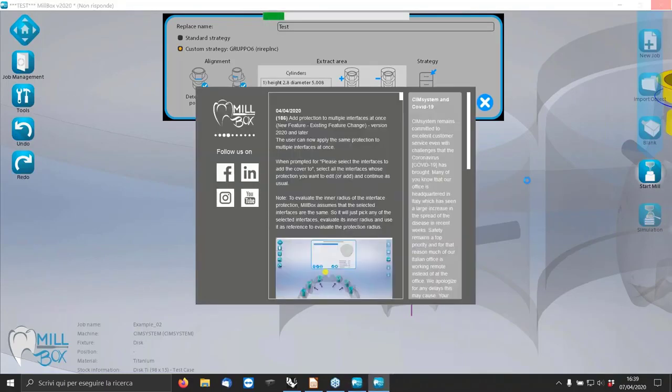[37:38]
That's it. And automatically, the software moves this connection to my database folder. In the meanwhile, we open another project, in which I show you how important the replace system is
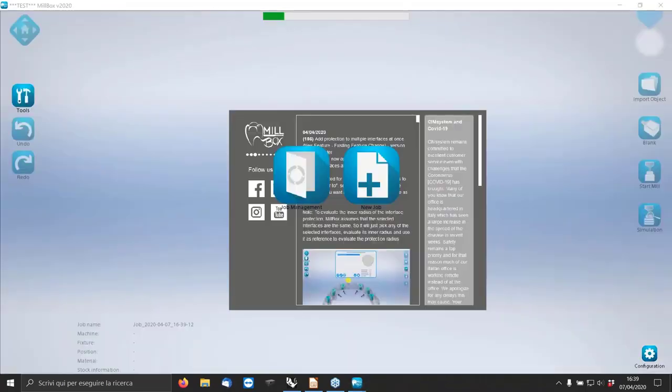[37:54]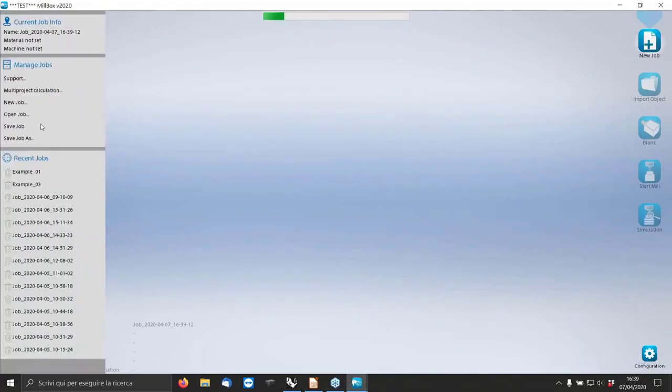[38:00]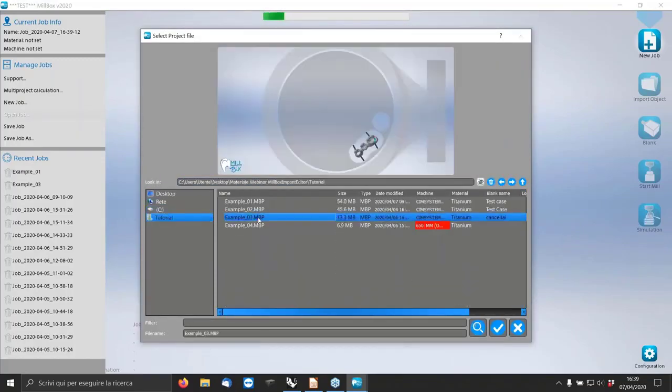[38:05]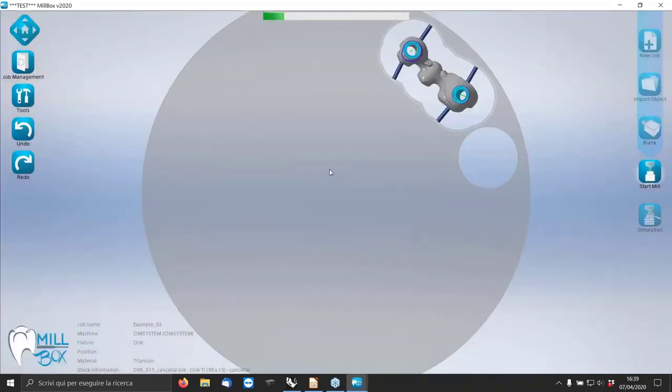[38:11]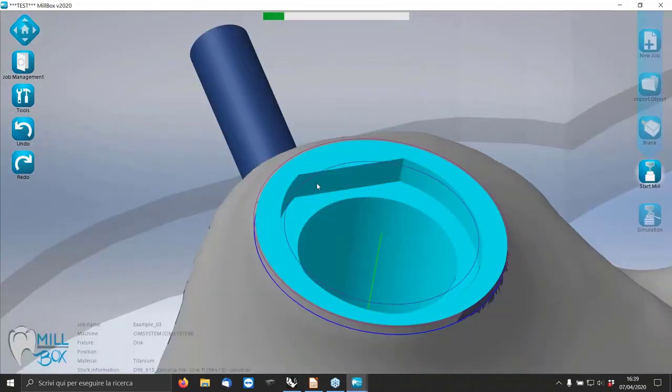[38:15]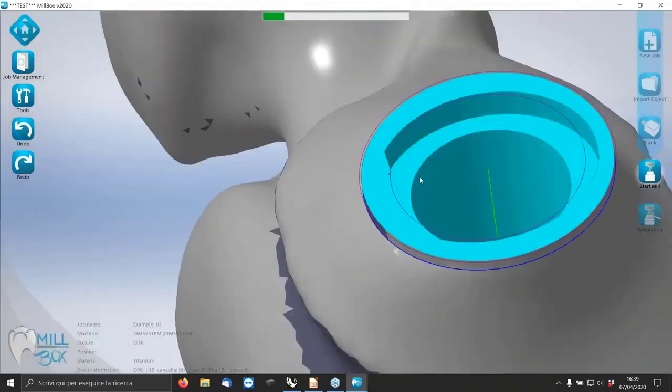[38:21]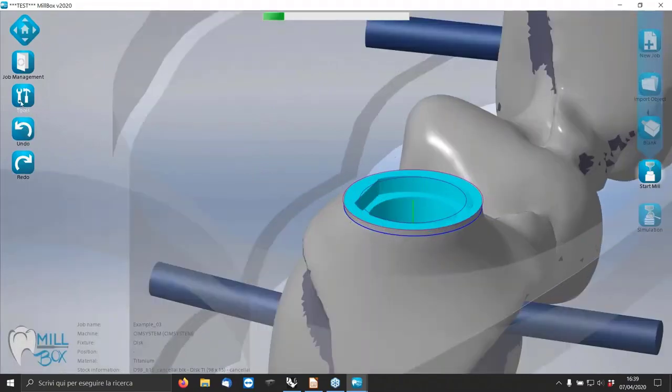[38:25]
for dental implant. In this case, we are going to see an implant bridge with two implants, in which the connections are fake, not original. There's no type of connection. You can see now. Look at here. This one isn't a real connection. It's a fake. So we can go and change this one.
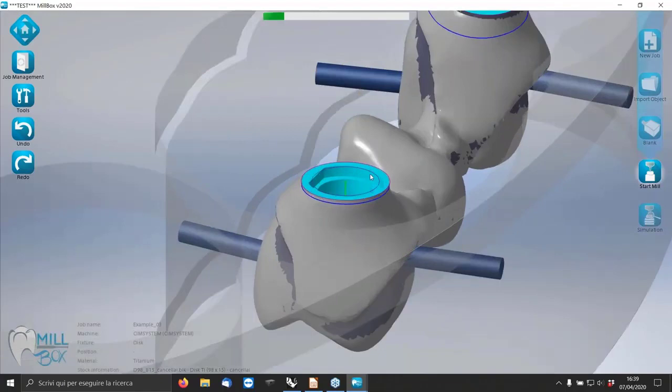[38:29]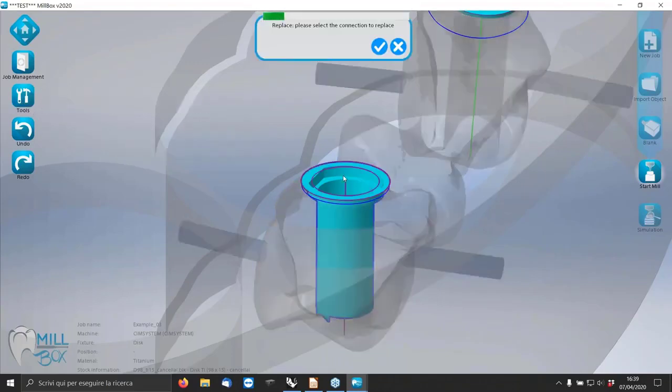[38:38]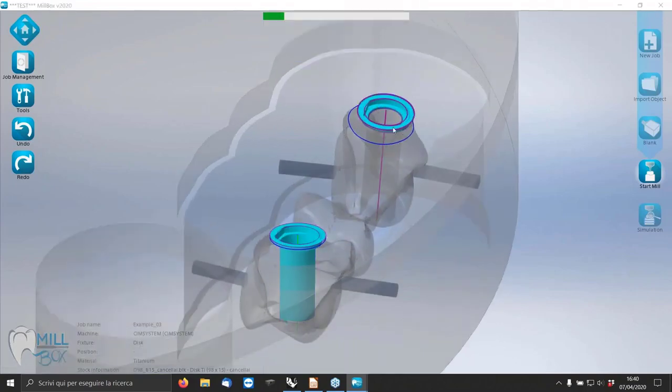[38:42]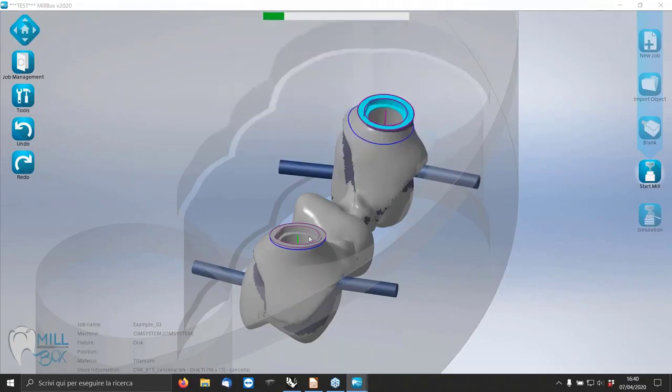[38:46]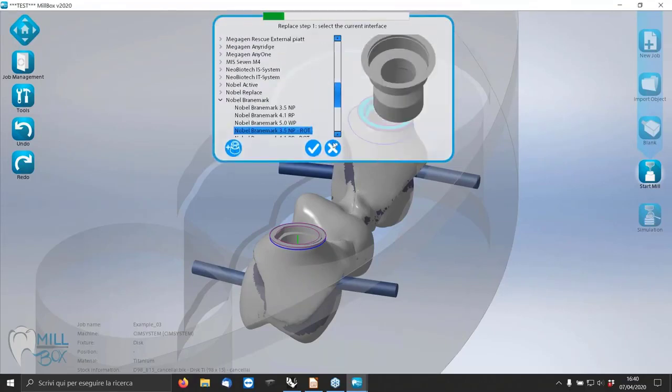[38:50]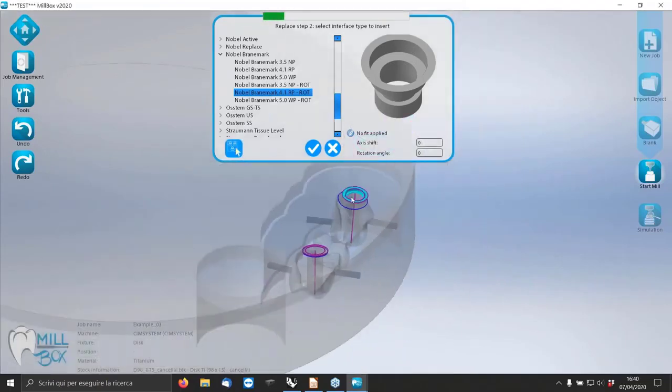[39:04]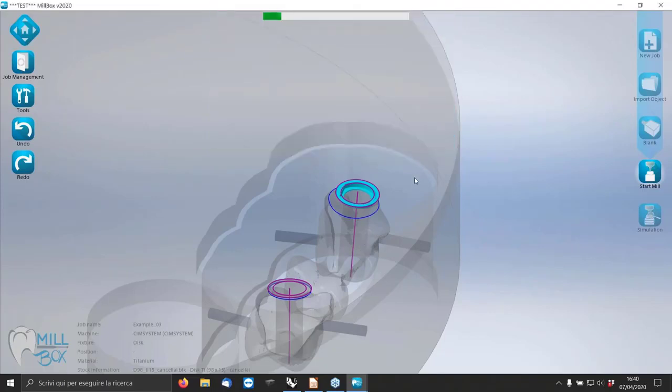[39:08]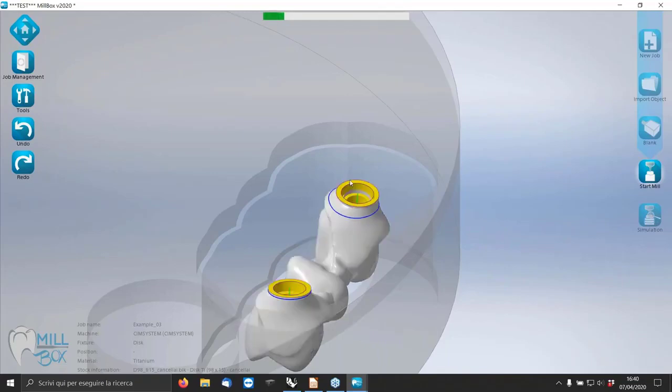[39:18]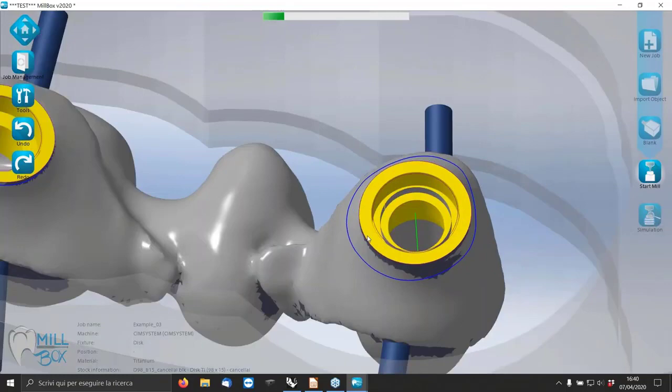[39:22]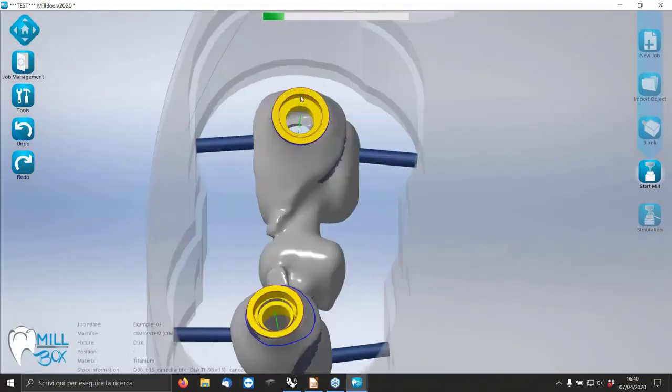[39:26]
This means that you are able to properly mill and produce your file. So again, tools, replace. I'm going to select this one. Okay, the other one is the same. I can add another one. This one could be, yes, this one. Here I select the other connection that is equal. I suppose it's equal. It's the same. And the software automatically changes both. And that's it. It's very, very easy and simple.
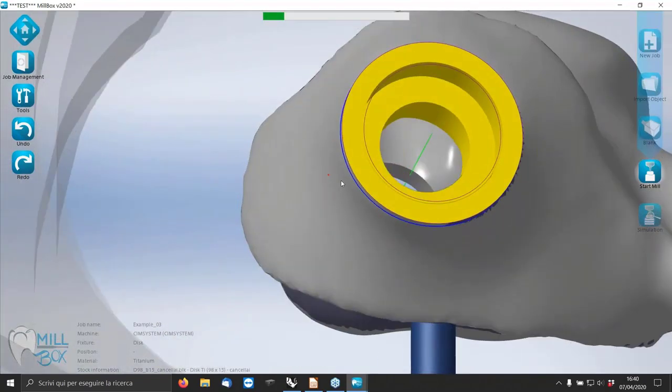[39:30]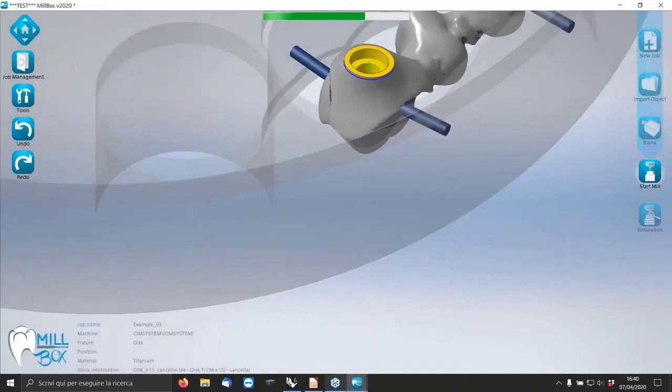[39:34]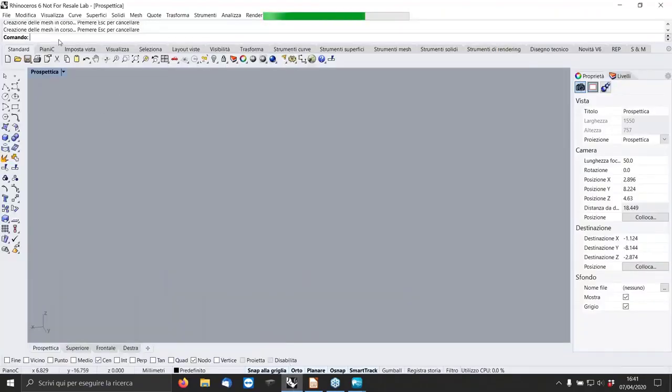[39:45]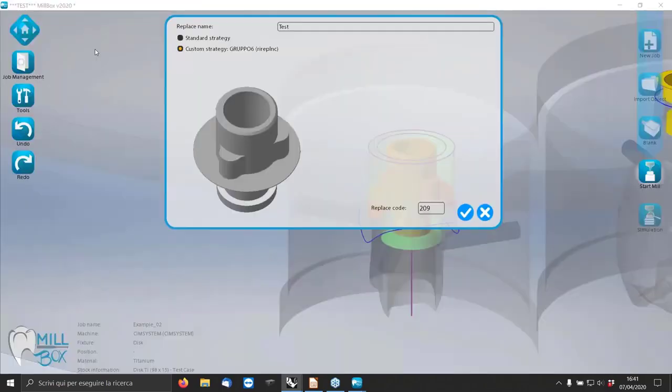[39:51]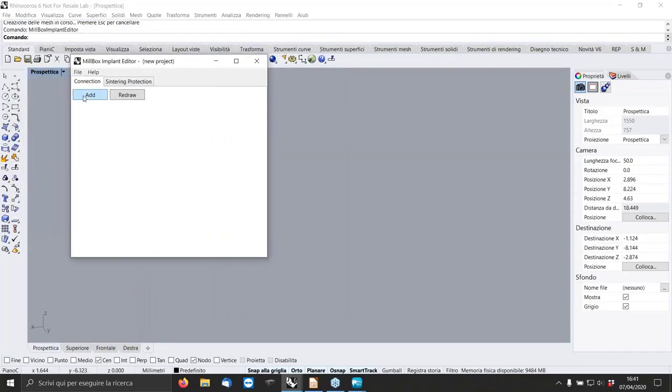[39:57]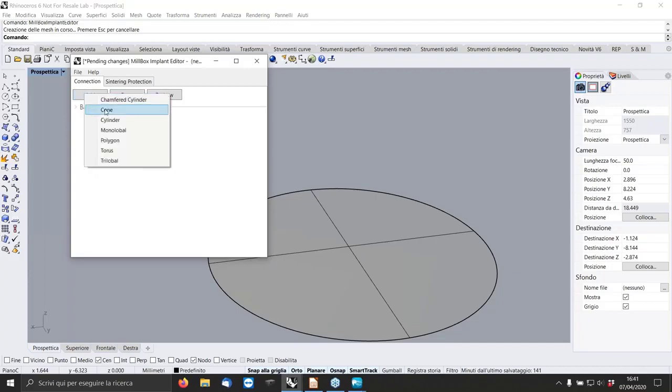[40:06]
I want to show you another particular connection, probably the most difficult. So we go back to MillBox, in Rhinoceros and in MillBox Implant Editor. Okay. And we start to design one of the most important, most difficult connections I know. The height is 0.5. Top diameter is 4.8. Bottom diameter is 3.8.
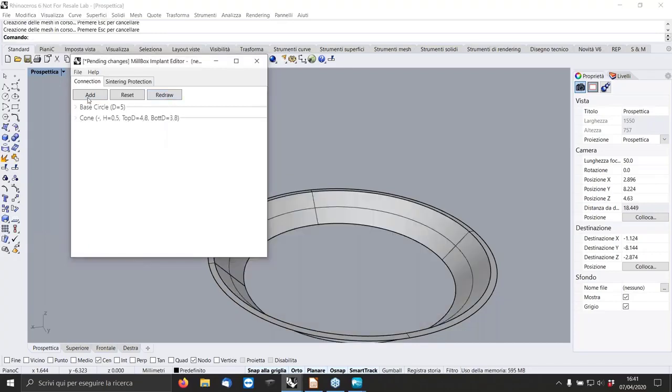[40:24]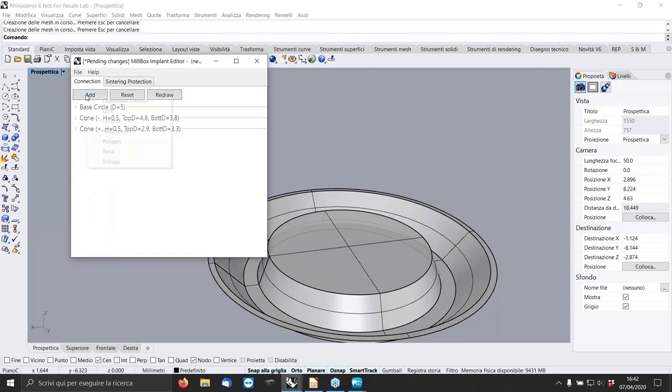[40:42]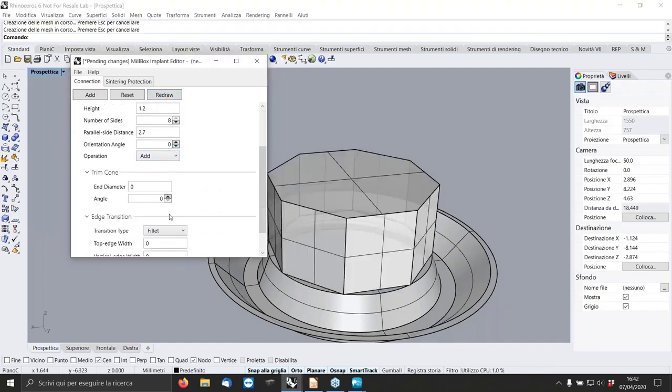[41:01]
And subtract, redraw. We can add another cone, 0.5. Top diameter is 2.9. Bottom diameter is 3.3. In this case, we have to add, redraw. Now we add a polygon, 1.2. 8 sides, parallel distance is 2.7. And OK. We need to put a chamfer on the vertical edge, 0.2. Redraw. OK.
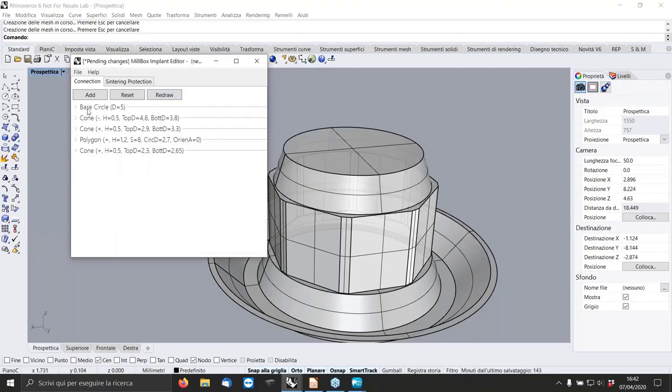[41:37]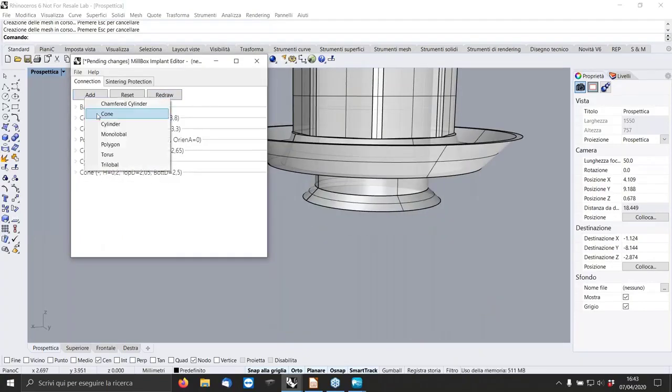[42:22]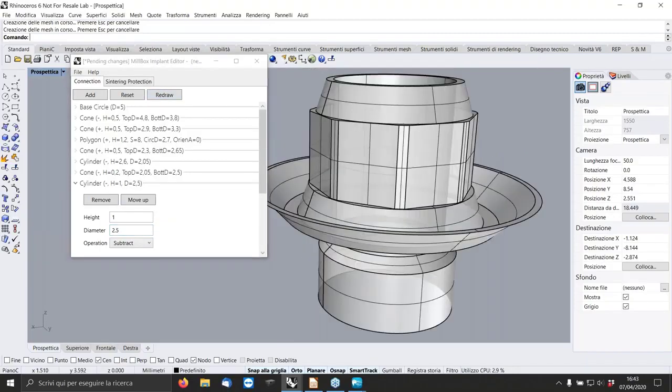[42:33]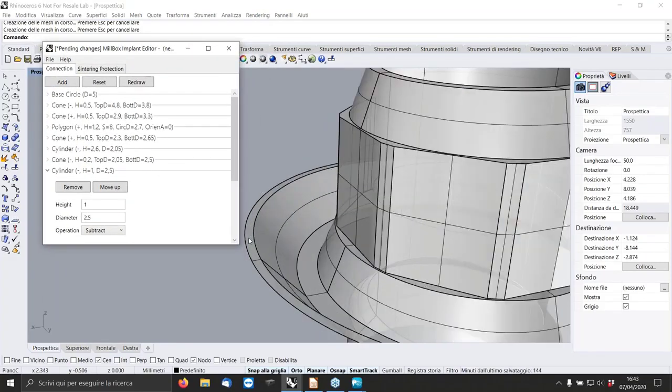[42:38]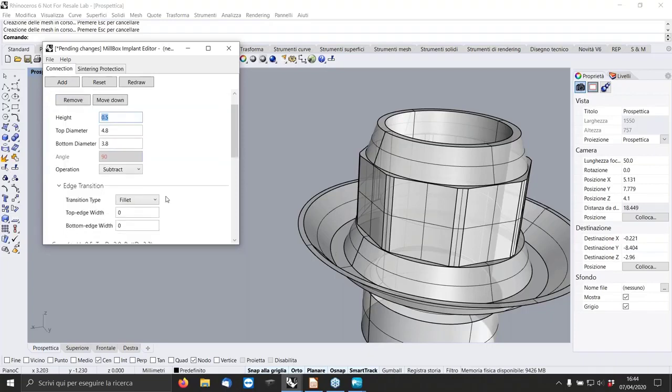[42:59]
The screw seat has a conical shape, so 0.2, 2.05, and 2.5. Sorry, 2.5. Redraw. This one. Last one, the cylinder. 1 millimeter, 2.5 of diameter. And that's it. Now I want to show you one thing. Normally here it's better to have a round shape. Originally it is this one, but it depends on which kind of tools you have. So for example, in this case, the maximum radius is 0.21. So fillet, bottom edge, 0.21, redraw, and also in the other cone, 0.21, redraw.
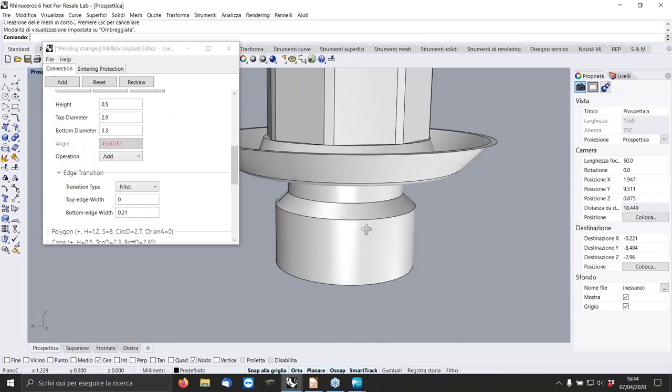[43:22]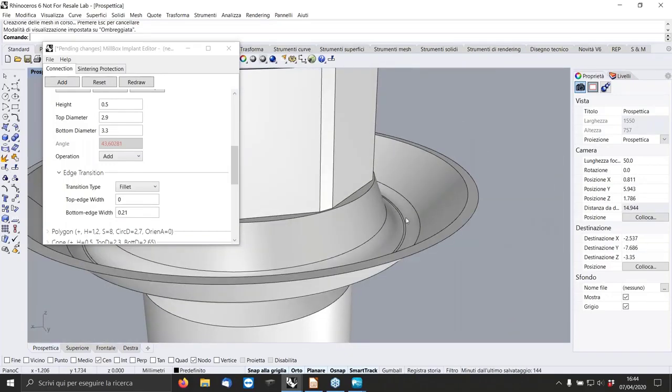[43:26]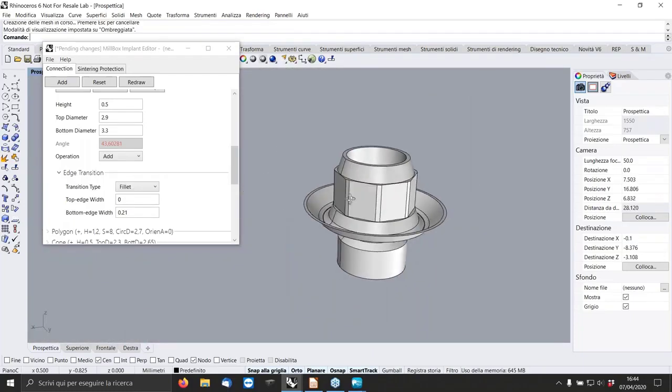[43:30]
As you can see, it's very easy to design, to draw. But we need to have more and more information about the connection, design and measurement and tolerance, and also about the tools we have on the machine. It's very, very important. Otherwise, the connection we are going to design could be wrong.
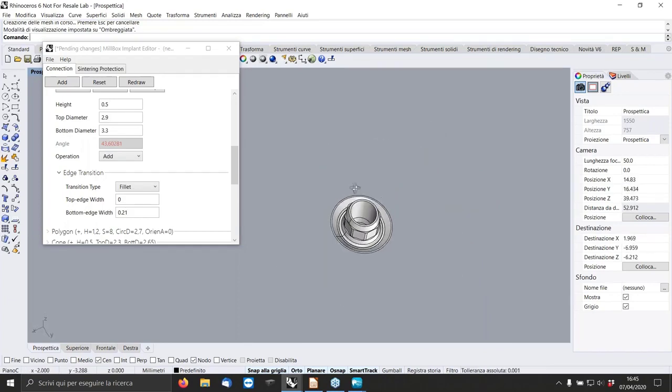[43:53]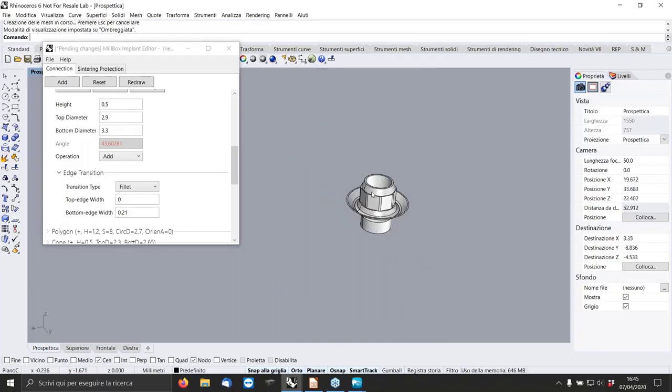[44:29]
An important thing about this type of software is that it is parametric, if you want to call it that. In the sense that you can design, you can try to mill. If the friction is too high or too low, you can go back in this software, change a little bit the dimension that is needed, and redesign and remill. The problem is not in the software that designs the connection or in the software that calculates the toolpath. This is important to say, because each material, each tool, each machine is different from another one. So it's impossible to design a single connection and work on different machines with different tools, expecting to have the same result. It's impossible. And this kind of tool is very useful for this side.
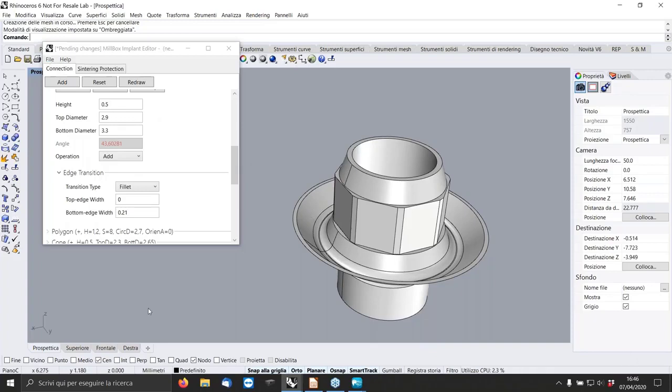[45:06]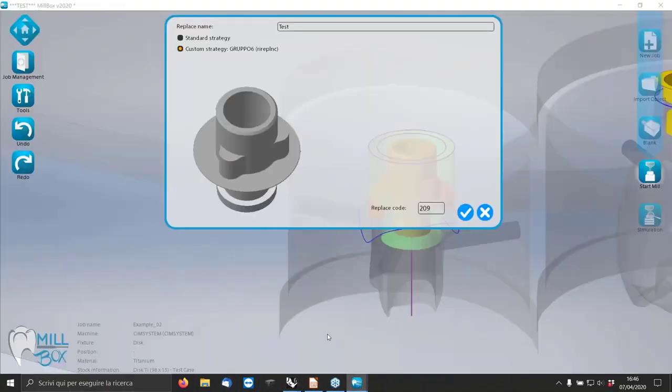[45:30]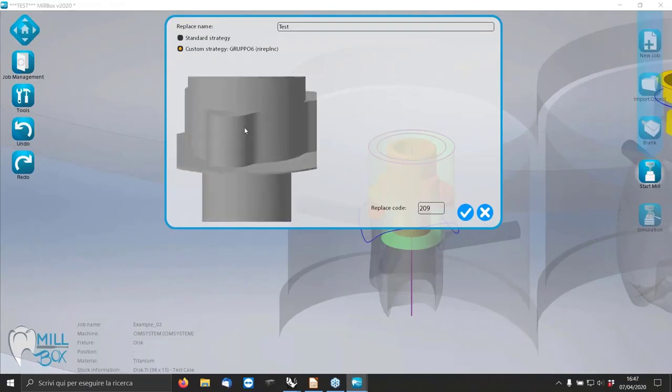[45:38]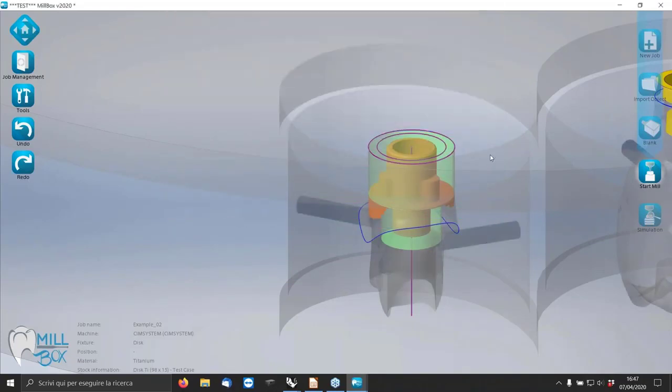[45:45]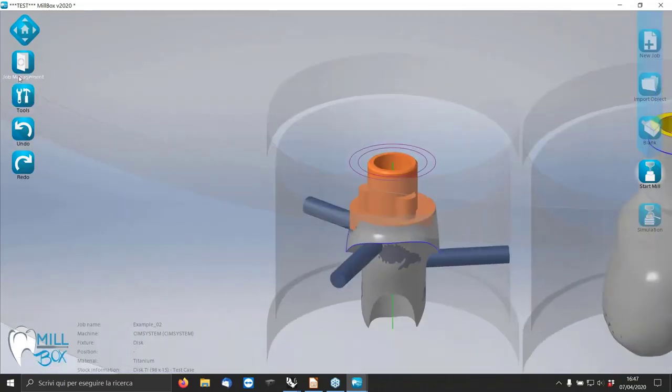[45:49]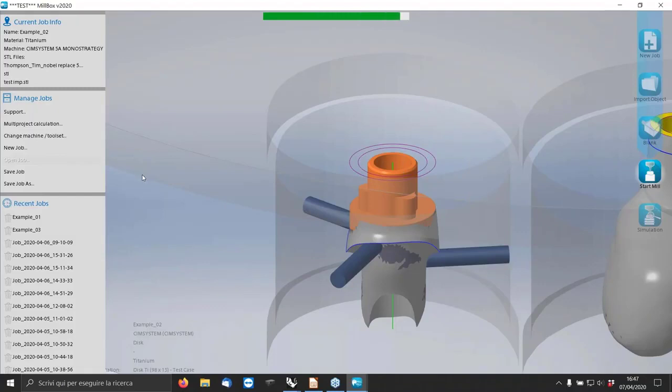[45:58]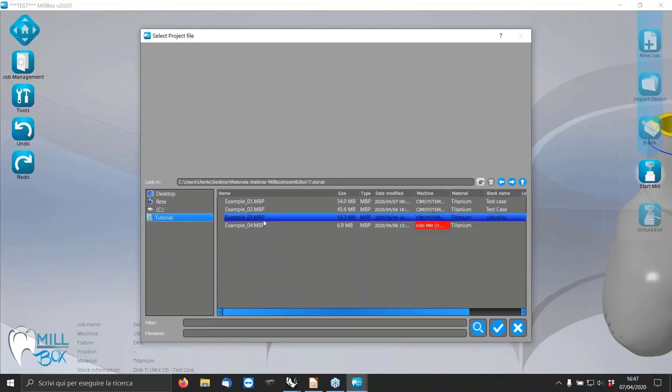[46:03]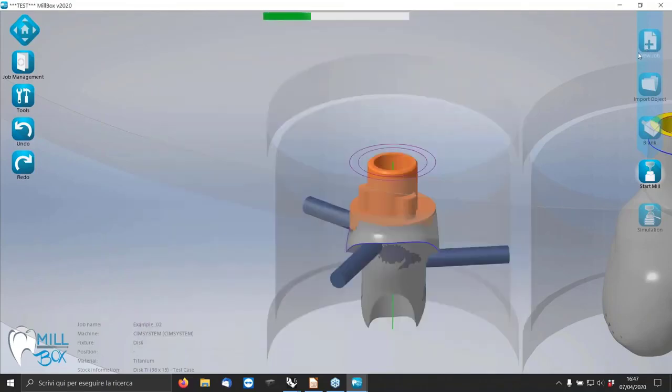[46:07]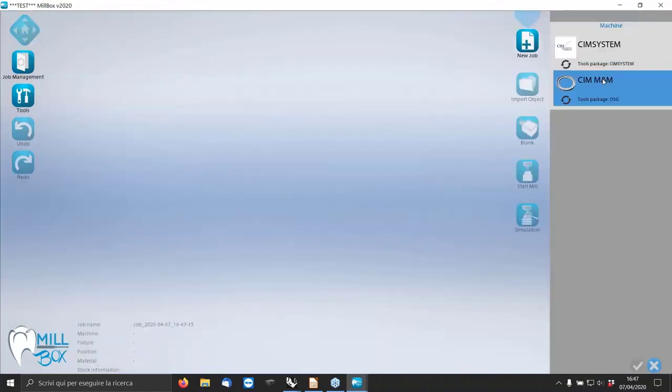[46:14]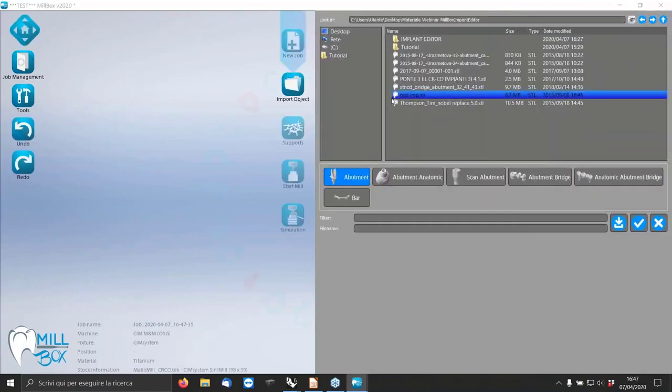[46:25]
Let's see how, okay, in our case, we can analyze. This one is the connection we extract from the STL file. In our case, last one, because I think we almost finished the time, what I want to show you is this one. As you know, MillBox also has the possibility to work with laser melting. The module is MakeMill. We can replace the connection also in this case. So for example, this, okay.
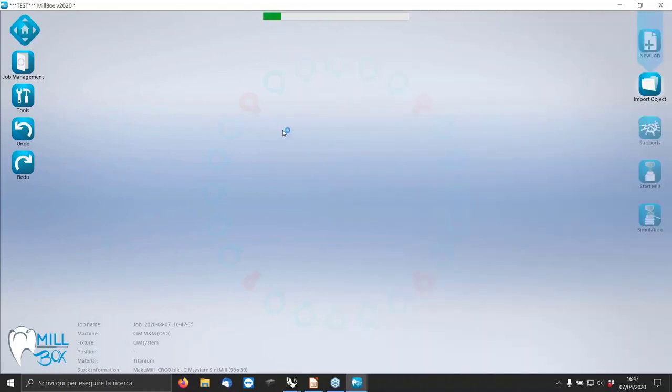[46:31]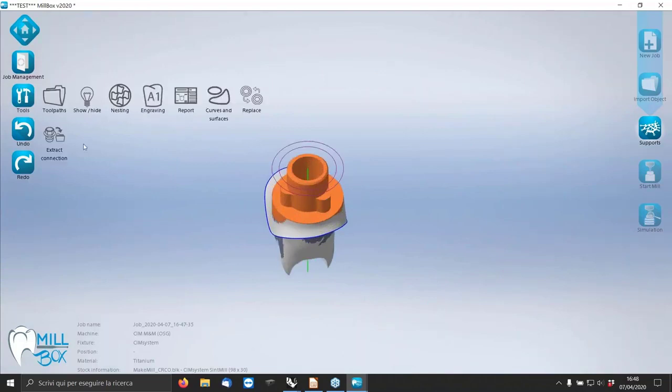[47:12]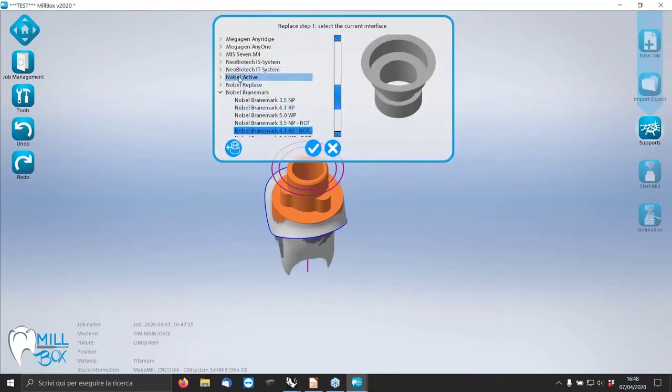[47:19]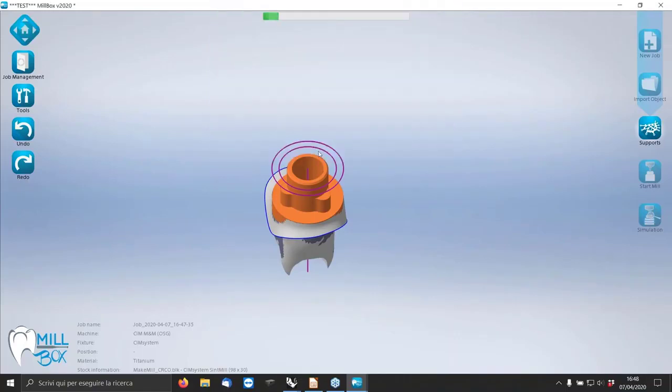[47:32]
So the replace system works on the milling machine, but you can organize your work also for make and mill. This kind of work will be analyzed in a different webinar by my colleague Giorgio. But just to show you, as we've seen before, we can use many different kinds of replace system. Okay. I can replace this one as before with a connection from my database or from a geometry I designed with MillBox Implant Editor. In this case, this one. And that's it.
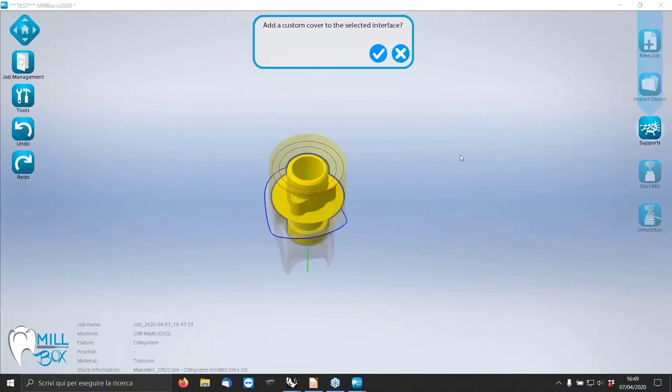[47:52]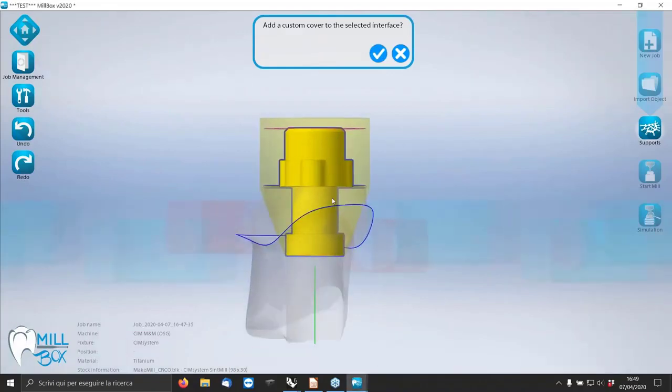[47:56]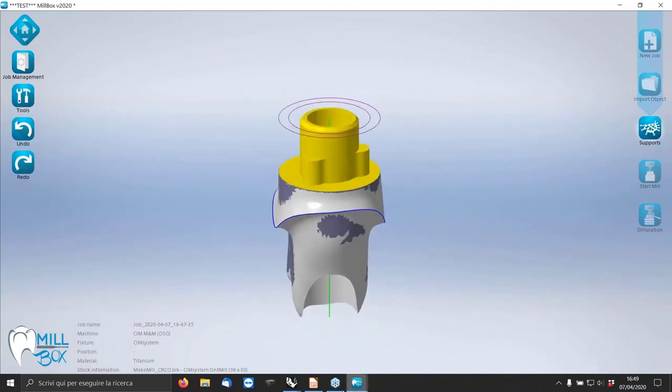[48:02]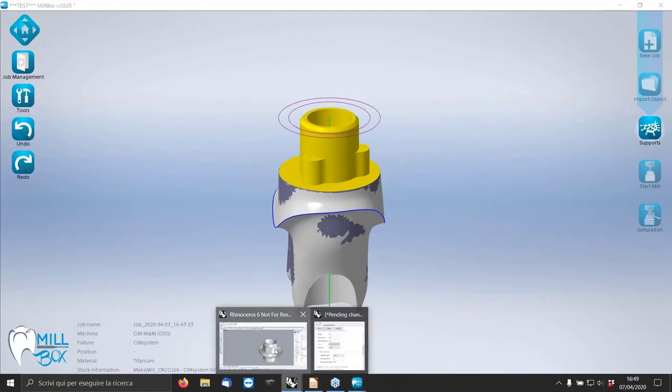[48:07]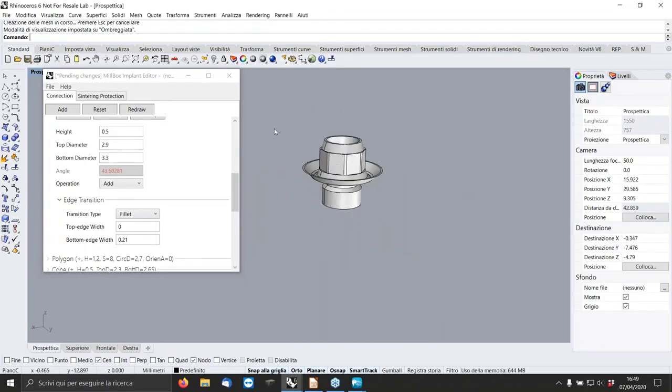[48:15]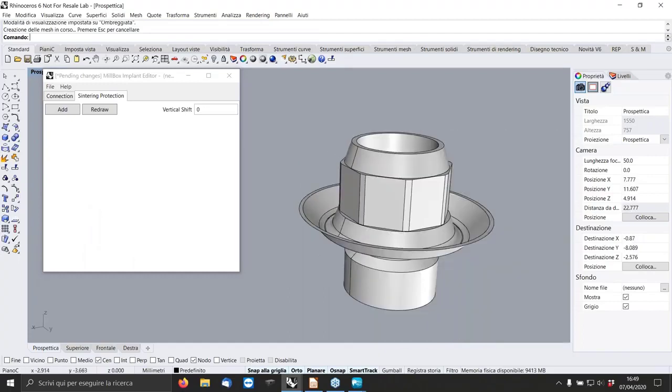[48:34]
Eventually, here, you can add a particular connection or simply select this one. Another thing from this side of the MillBox Implant Editor that I didn't mention before: you can see here you have a second tab, Sintering Protection. So in the first tab, you design your connection. In the second tab, you can design a protection for the sintering.
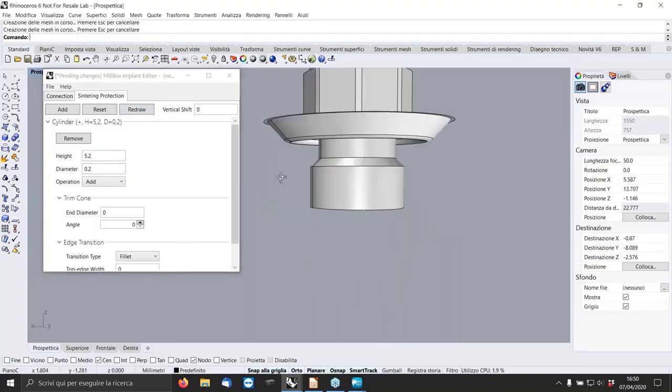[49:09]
So I can design a protection that adds some more material that has to be taken off during the milling operation. For example, here I can create a cylinder with the same diameter, so 5 millimeter, or a little bit more, 5.2, 0.2 millimeter height. Wrong. Here is 0.2 and here 5.2. Redraw. Okay.
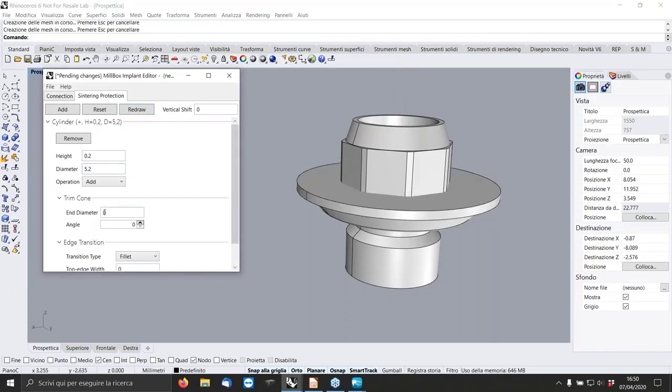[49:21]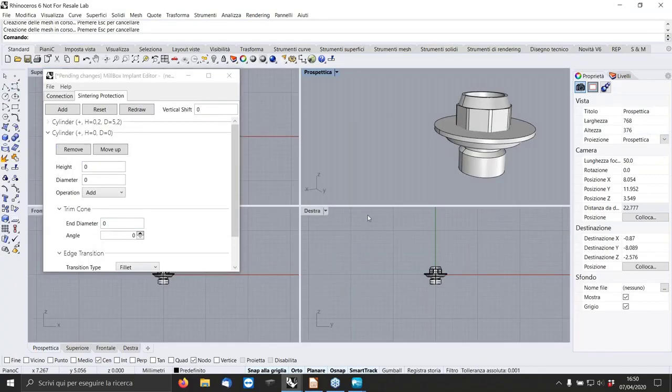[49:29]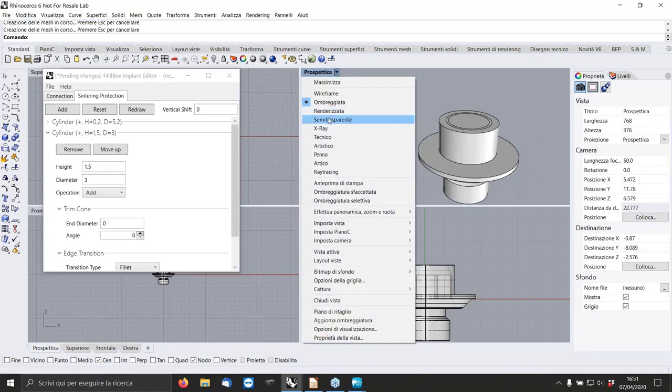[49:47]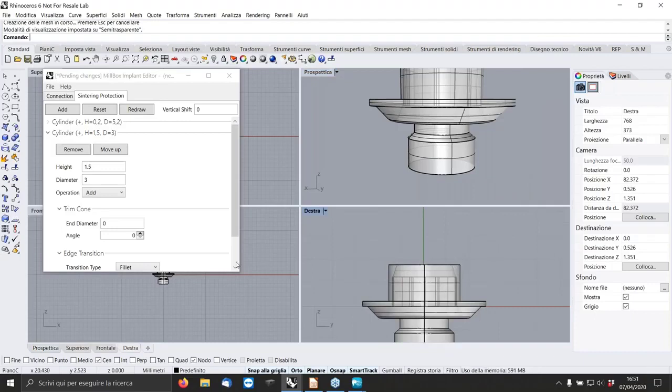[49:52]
Then I can add another cylinder. I don't know. Let's say, have a look here. Each square is 1 millimeter. So you can put, I don't know, we try 1.5, diameter 3. Redraw. And here we have our connection. I suggest to make it a little bit wider and bigger in diameter. Redraw.
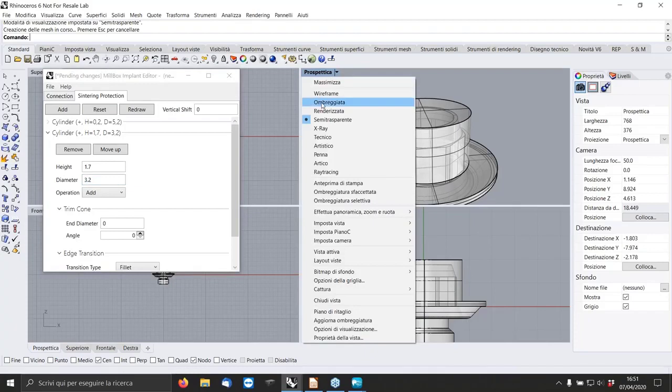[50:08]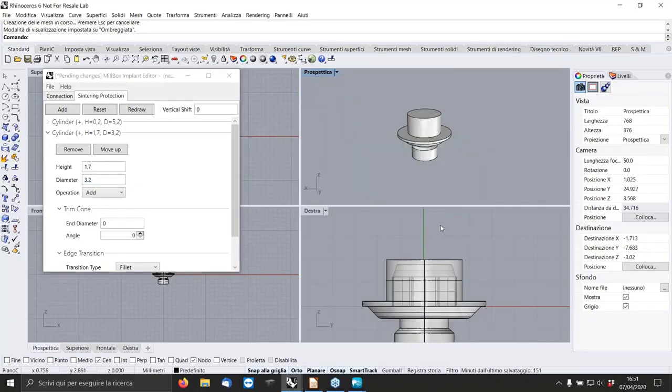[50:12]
And that's it. So during the sintering phase, the machine will sinter this type of connection. When you go back in MillBox, you are going to realize the original connection, and that's it. Any question?
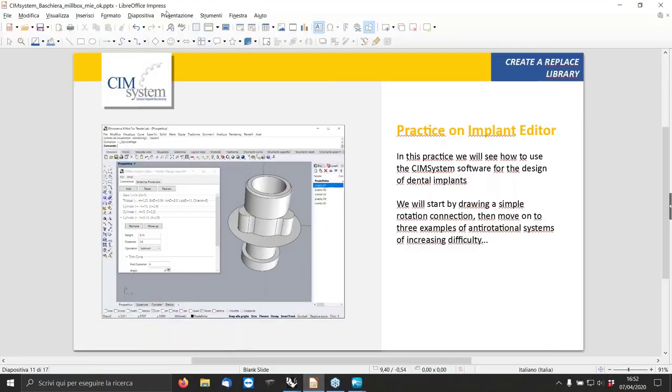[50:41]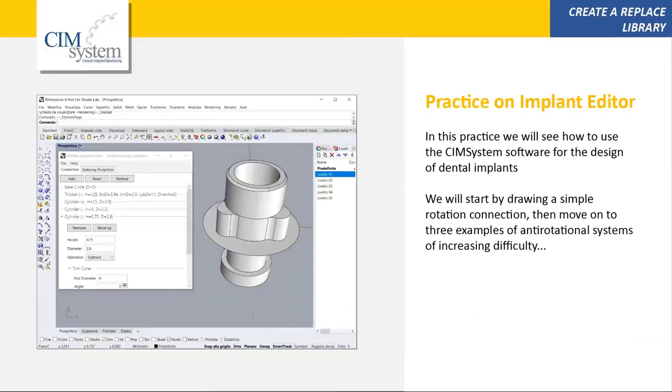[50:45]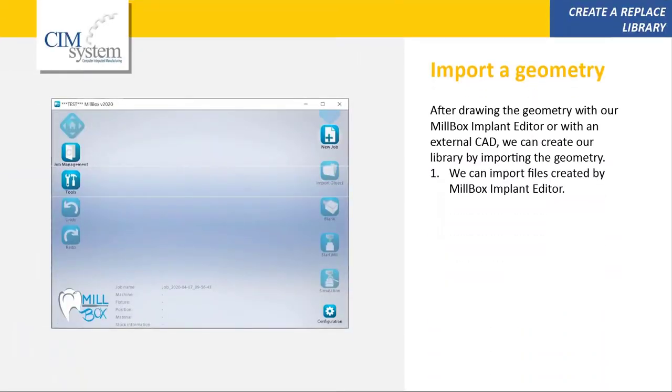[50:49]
I think we have completed our. Okay. For the moment, we have no other question. Just some compliments for your exposure.
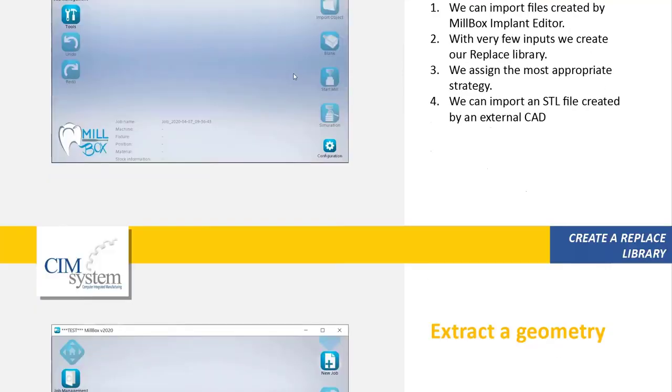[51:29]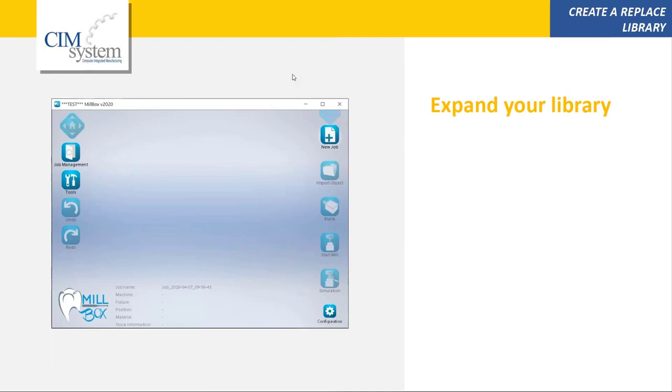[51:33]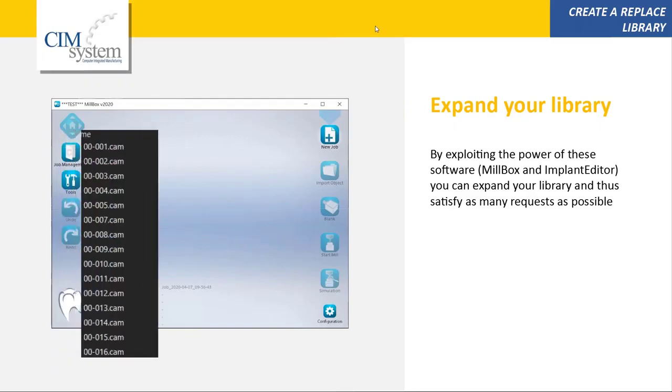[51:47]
Just a second, maybe we have the last questions. Yeah. Okay. I'm sorry, Dimitros, but I don't read any of your question. Could you write again, please?
The documentation about MillBox implant export, I think, will be available on our website soon. And in this case, we can give you more material for your documentation.
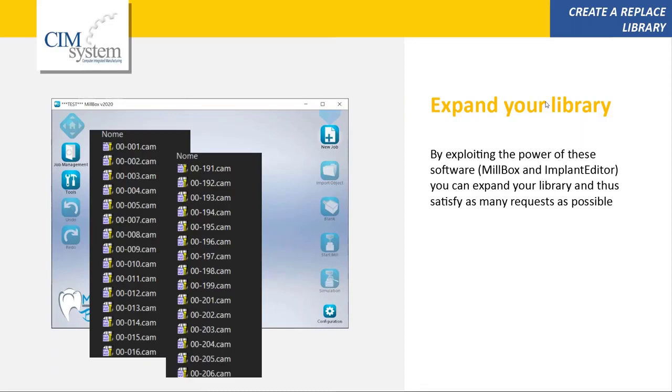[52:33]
Yeah, sure. Okay, I'm sorry, but no, only thank you, Adriano. Thanks again. Thank you.
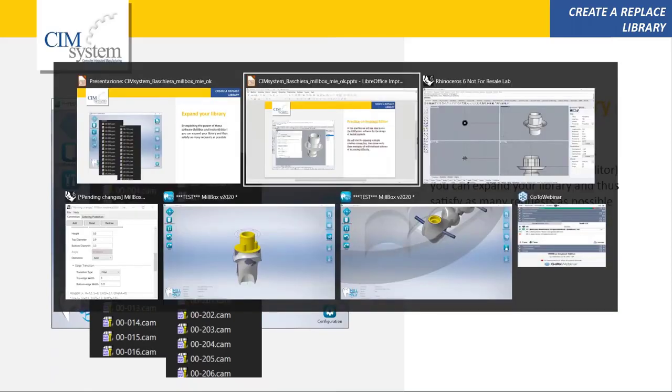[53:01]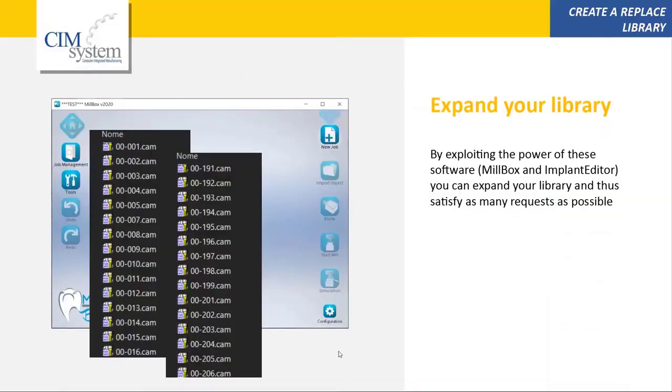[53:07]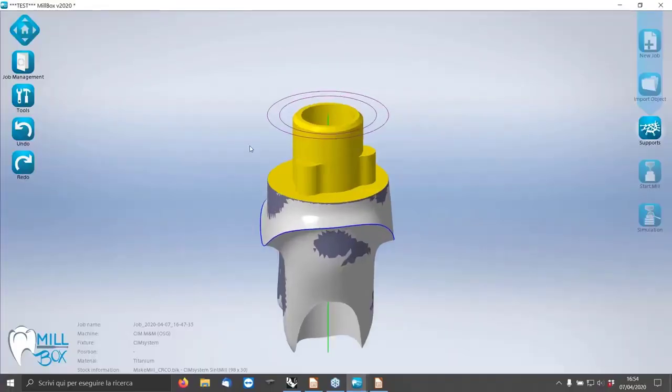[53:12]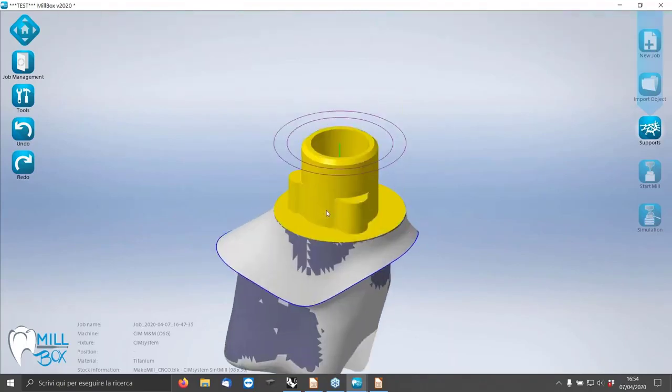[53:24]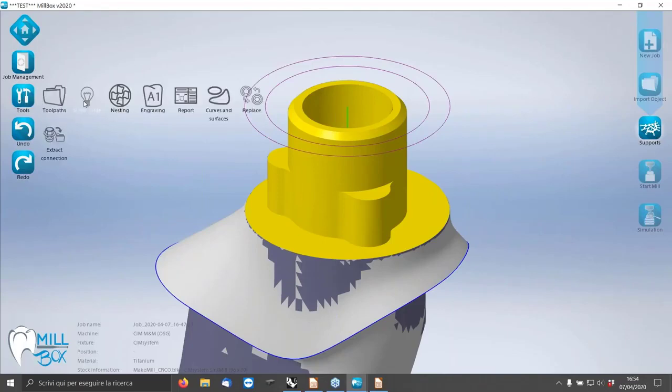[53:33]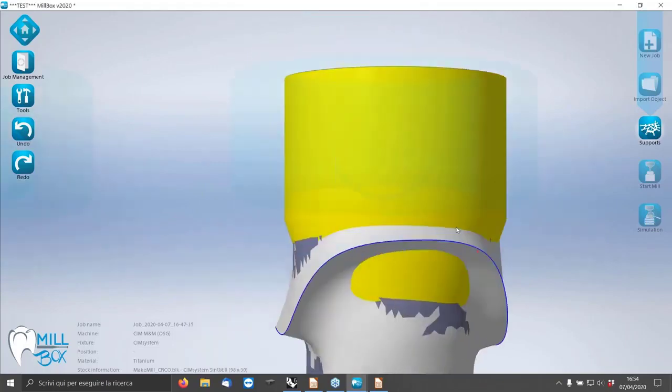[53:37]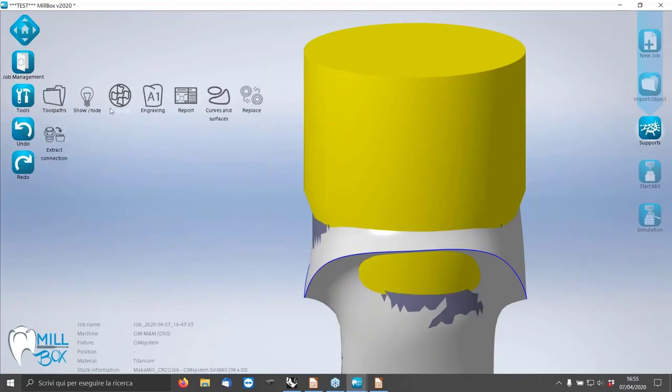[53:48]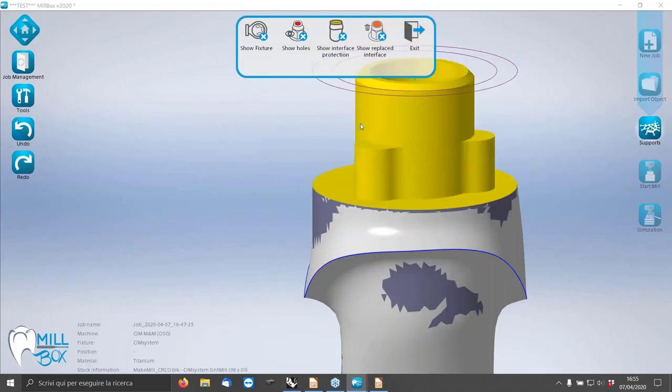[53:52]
Just one more question. I didn't understand the protection for sintering. Can you explain again, please? Okay, yeah, sure. When you go to laser melting, let's go back to this one. When you go to laser melting, obviously it's not possible to produce the connection part with accurate milling. So it's better to produce it with this kind of cap, and after the laser sintering phase, go back on the machine and work by milling only the connection you have.
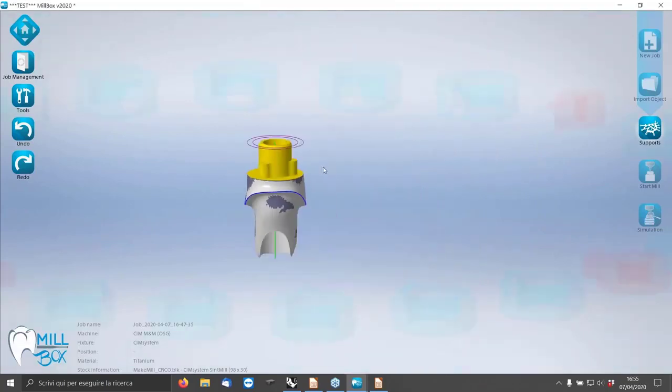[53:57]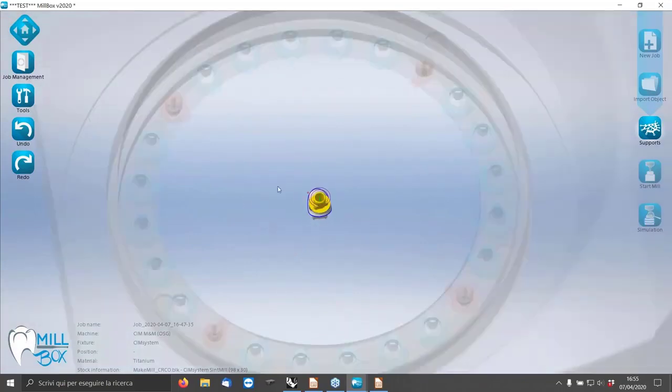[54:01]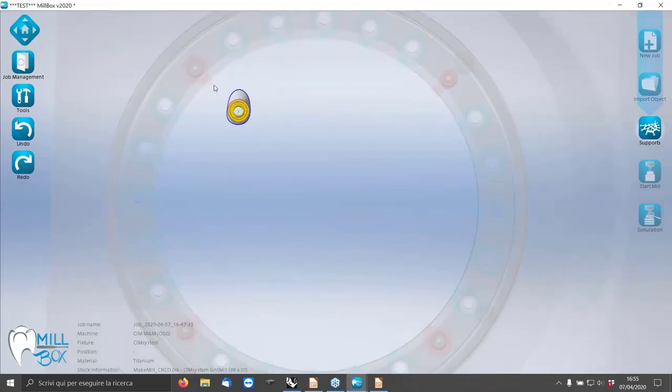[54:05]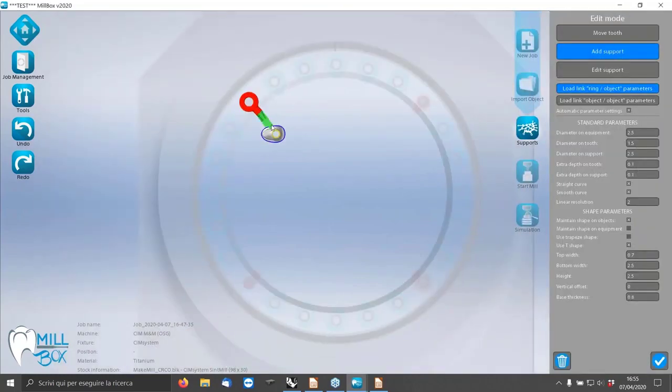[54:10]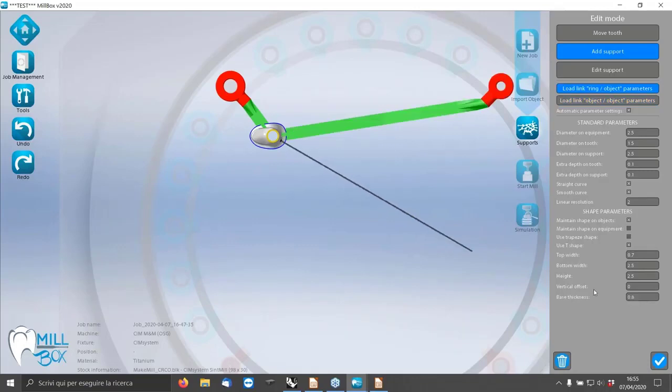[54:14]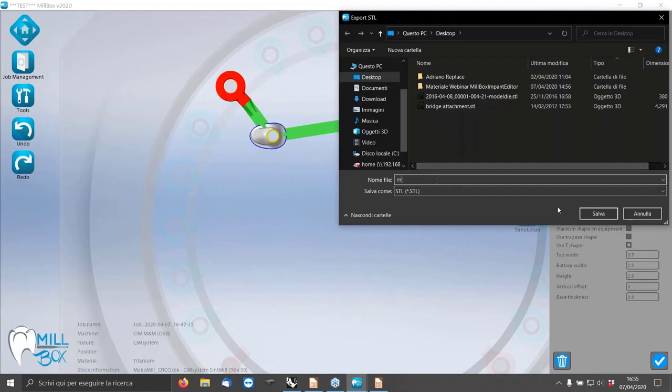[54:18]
So in the machine, you have to add a particular support. Now I show you just a little bit, but as I already told you, my colleague Giorgio will make a webinar soon on this part. Okay, we have 4 minutes for just 2 more questions. And that's it. You send this net to the laser melting, then it goes back to you, and you can put it on your machine with a particular holder and mill only the connection.
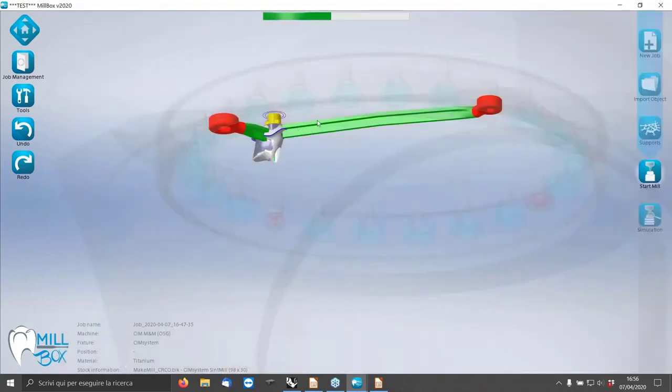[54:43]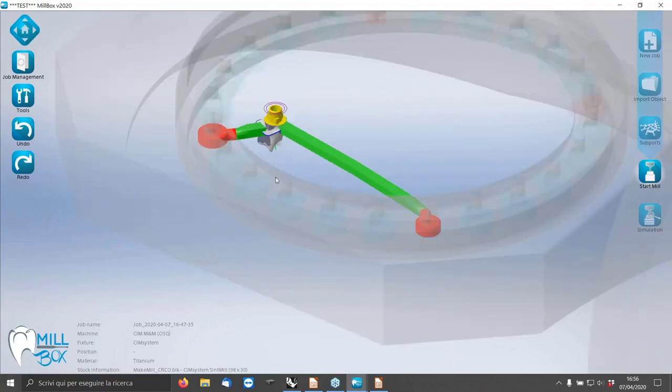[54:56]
Did you understand now? Is it more clear? I can go with the next question for the last 3 minutes. And they ask if it is for all machines. The replace system? You mean the replace system or implant bridge in MillBox Implant Editor? I think MillBox Implant Editor, but we can ask our customer if they can be more specific.
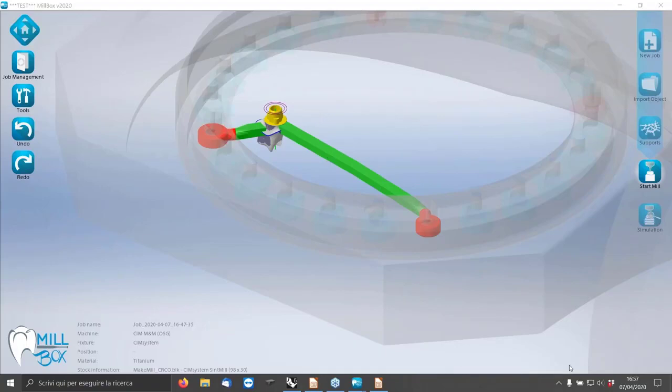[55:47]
Because for the design, it doesn't matter which kind of machine you have. The only thing is to understand which kind of burs and tools you have on the machine. Understand this, you can design for each machine you want. Okay, you say the editor will be able to apply to the MillBox versions. It depends on which MillBox version. Yeah, it's a module you can add to your version of MillBox.
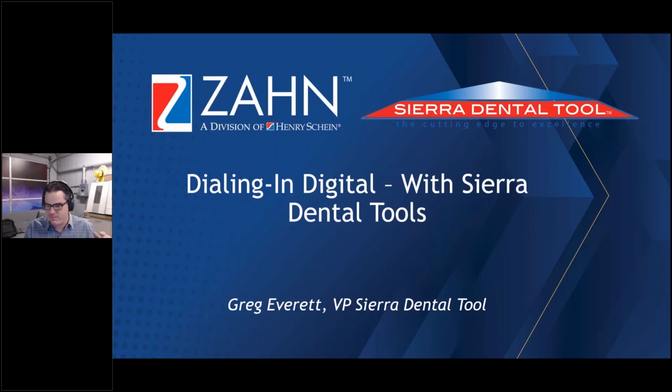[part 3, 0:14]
I'm the VP of Sierra Dental Tool. I have a really in-depth lab background. I ran a milling center for 10 years. And my elevator pitch on that is that I've literally broken and fixed everything in the digital process. So we're pretty good at figuring out ways to help labs work more efficiently.
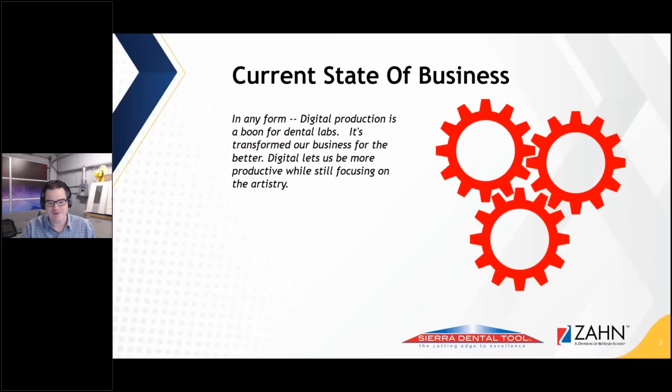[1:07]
And then on top of that, in the last 3 years, I've been in this position with Sierra that's highly unique because I've got exposure to so many different labs and situations through our partnership with Zahn. So with that, I've got a couple of slides that we'll run through here, and I'll try to keep it in the quick bite time scale, and we'll jump through it here.
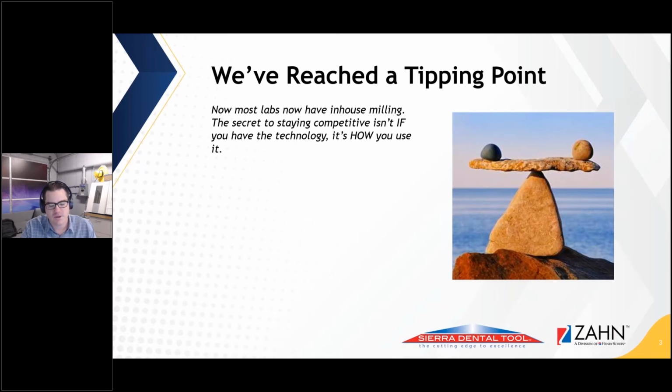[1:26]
So I don't think that anyone disagrees that digital is here to stay in our industry, and for most labs, it's really changed the game. But when you look around, the observant among us will realize that digital has pretty much saturated the market. It's hard to walk into a dental lab nowadays that doesn't have at least some digital process in their lab, and that could be as simple as just having a scanner, to having 20 milling machines in a room full of 3D printers.
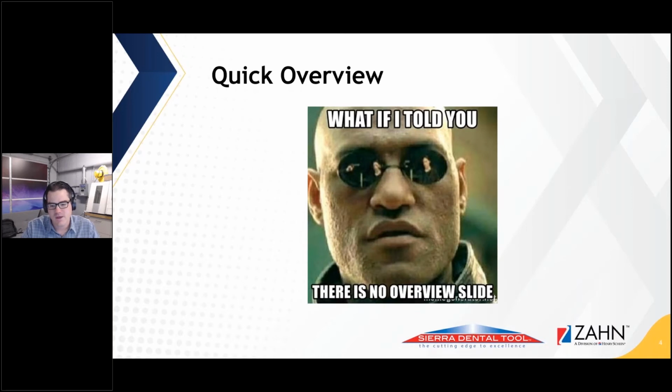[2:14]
So it really doesn't matter if you have digital now. It's kind of a requirement if you're going to be relevant as a dental lab. What matters is how you use it and how it's implemented in your business. And so that's basically what I want to go over here. And you'll find that my presentation style, I'm not really reading slides or doing anything. I'm just running through it and using the slide as an anchor point for my talking freely.
So what I'm going to go over real quick is some ideas on digital process in the lab, some top tips, and maybe some ways to manage your consumable spend a little bit more efficiently. As you guys may know, Sierra Dental Tool, we manufacture the tools for mills, but that's indirectly related to all the different mill processes because they all feed into that tool. So I've started broadening my presentations, from, hey, here's a tool, here's why it's awesome, here's how it's going to save you money, to, let's look at the entire process and show how a good tool fits in that process. So the majority of this is all on process.
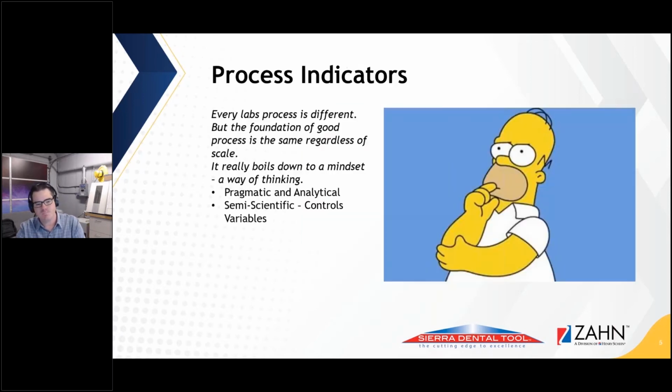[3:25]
The first thing that I tell labs that I'm talking to is think about your mindset. The problem is that there's not one good answer for every lab. There's not a one size fits all thing. But the largest common denominator among all labs is the mindset and how they look at their production process. And if you look at how you're doing your production in a pragmatic and analytical way, and when you make changes, you control variables. Think about the scientific process. Don't change 7 things at once because you won't know what the effect of that change was in your process. If you take anything away from this, that's the biggest thing: when you're looking at your process and trying to find efficiency, be in the mindset of analytical and variable control.
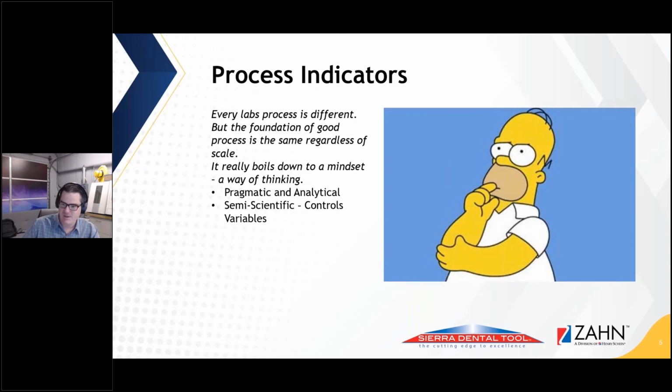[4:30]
So what is a good process? What do you need to get a good process other than a mindset? You need good inputs. There's an old saying that I'm sure everybody knows: if you put crap in, you get crap out. So you've got to have good materials. You have to have good machines. You have to have good people. All the inputs into your process make the process. And then another addition to that is the mindset thing.
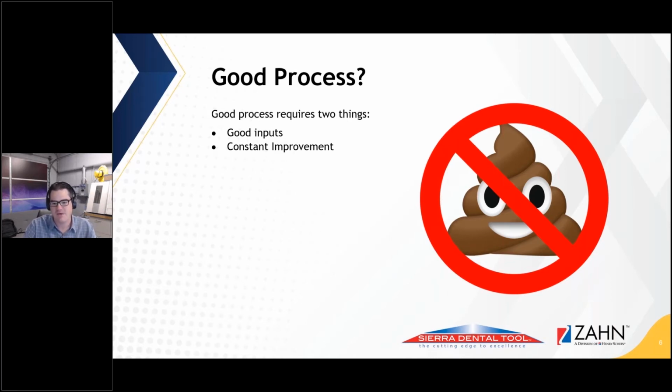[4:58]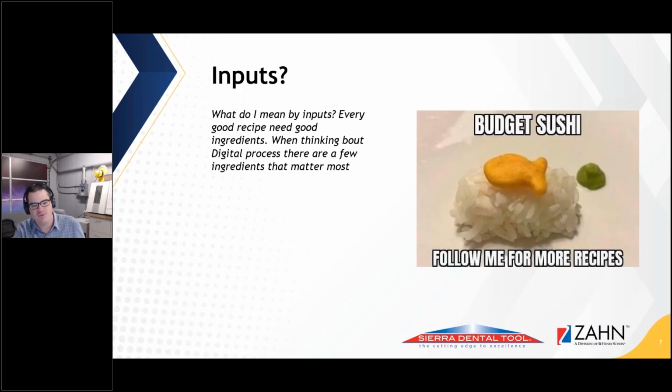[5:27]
You always want to have a mindset of constant improvement. Look around in your lab and, hey, there's dust piling up in that corner. Why? Is there a door that's leaky, or do you have a draft? Fix the root cause of even the smallest problems, and they'll go away. And the whole entire hair on fire situation will be reduced a lot if you're constantly trying to improve. Never stop improving. So I've got a couple of thoughts on inputs.
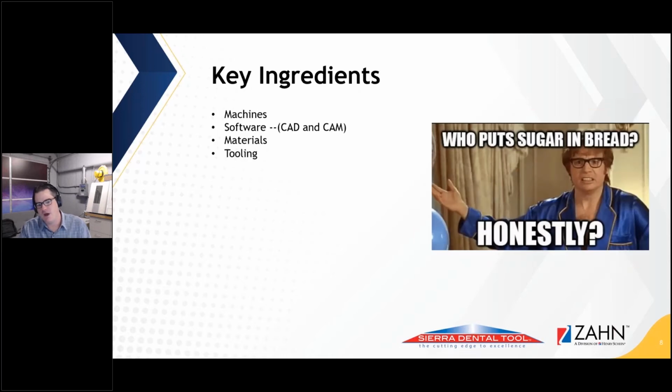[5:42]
When we're talking about what's going into your process, you can divide that up into some pretty big categories. Like the top four essentially in a digital machining process are your machines, obviously, your software, which is both the CAD side and the CAM side, highly important, what materials you're using, and then what tool you have employed in the process. And if you make decisions around each one of those points in the right way, not only can you be successful with digital, you can also be extremely profitable and sustainable, and it can be really good for your lab business.
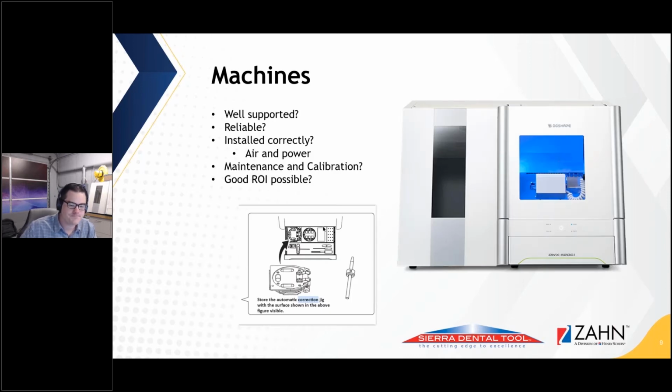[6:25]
So with that, a little detail on each one of those points. Okay, I get asked this a lot. What machine should I buy? And I'm basically impartial. We make tools for all the machines. So it doesn't really matter to me, wearing the Sierra hat, what machine a lab buys, because we know we can deliver regardless of what they choose.
And so the way that I answer that question is, is the hardware good? Yes, all the hardware is good. It's all about the relationship with your vendor on the machine. How well supported is it? Can you get parts when it breaks? Because it will break. All machines break. And just consider the relational aspect when you're making an investment like that. And on a daily basis, guys, I deal with the Zahn team. World class. Like, you can't do better. So obviously I'm going to have a little bias on that.
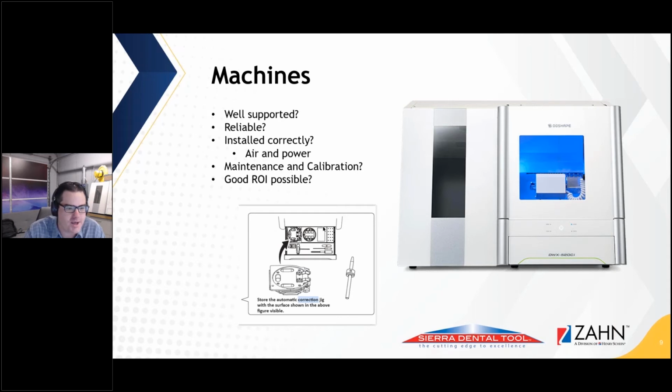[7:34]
Then when you're looking at how difficult is it to maintain, how difficult is it to keep it up and keep it reliable? I'll tell people to download the user manual for the machine you're considering buying and read it, and get an idea of what it is going to take on a daily basis to keep this thing running. There's pretty drastic variance depending on what you decide to use. And then also look at what parts cost. What does it cost to have a service tech out? All of these things come into play, and you should calculate that in your ROI. It's not just cost of machine; it's cost of machine and operating and maintaining the machine.
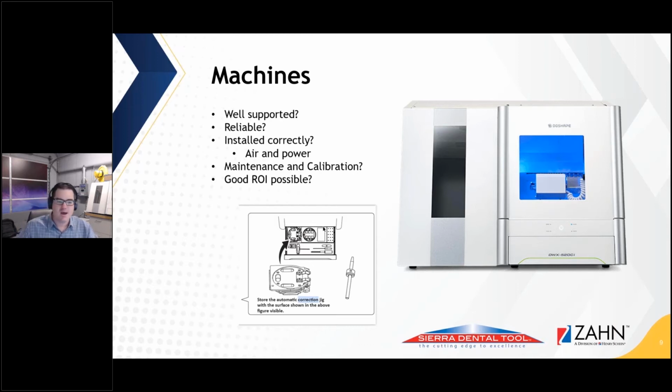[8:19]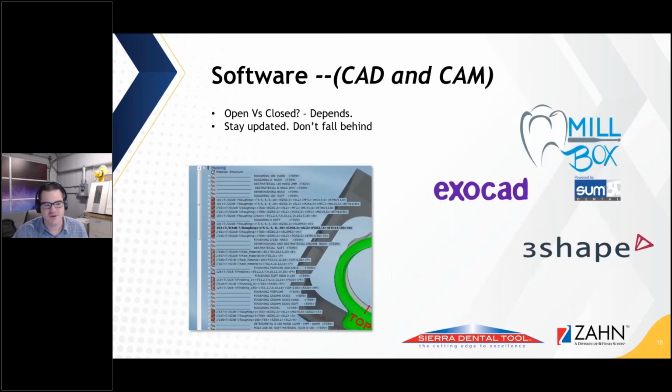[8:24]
All right, moving on here. A little bit of fun on software. So you have two major points on software when we're machining dental prosthesis. I just call them parts. It's the design, which is obviously more on the input side of the process. And that's very important. You can choose a closed system or an open system. There are benefits and drawbacks to those. Generally, I think the feel is to go open nowadays because of the flexibility that it gives you from a business standpoint. But then also on the other side, with closed, you generally have easier implementation.
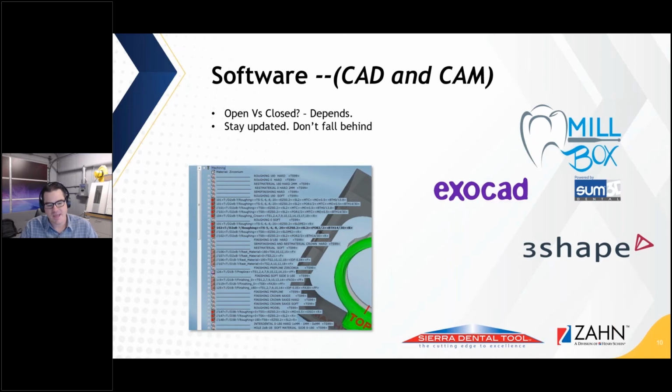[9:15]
And then on the CAM side, you also have a similar choice to make. Some of the machines out there come with a closed CAM. Those usually work well turnkey, and you can make crowns and kind of forget about it. But the problem is when you want to add something new, or you want to do something flexible, or something maybe off label, which is really common. Us labs like to innovate and do things differently. That's when an open CAM really shines.
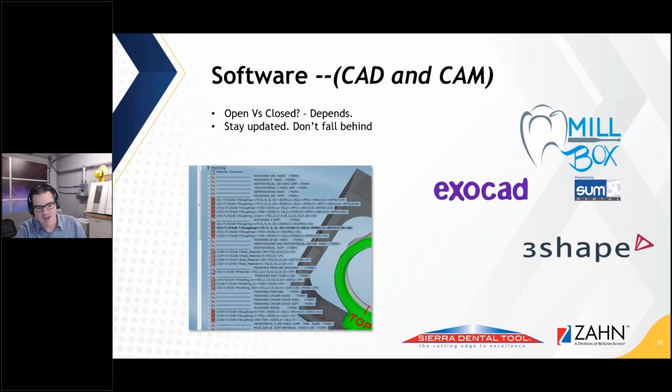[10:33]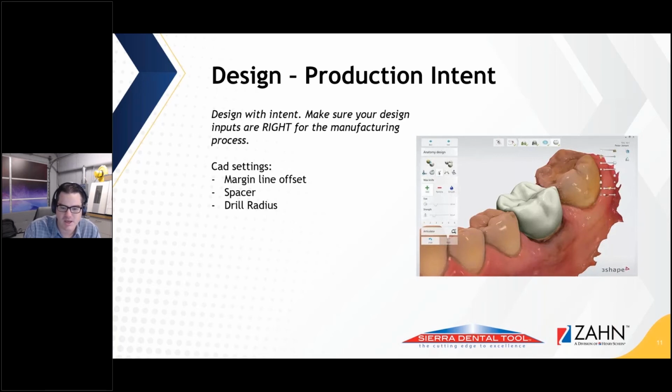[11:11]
A little bit more detail on design. It's uncommon to walk into a lab and see that they've actually tweaked their design side to a point where it's really good. Usually you're taking it out of the box, using a default configuration, and those work well. But the design settings ideally are tuned for the production process. So for instance, if you design a crown for 3D printing and you design a crown for milling, those are going to be completely different crowns because the process is different. But on a more micro scale, if you design a crown for one machine and one tool set and one CAM software, that combination is going to be different from a different machine or a different CAM software. And so the default configs that are implemented out there are generally, I like to call them, the minivan of configuration. It's like, how do we hit all these boxes and make something that works?
I think the point that I'm trying to make with this slide is that if you analyze your settings and maybe work with your dealer on getting those perfected for your process, you can pick up a lot of efficiency off the default shipped setup.
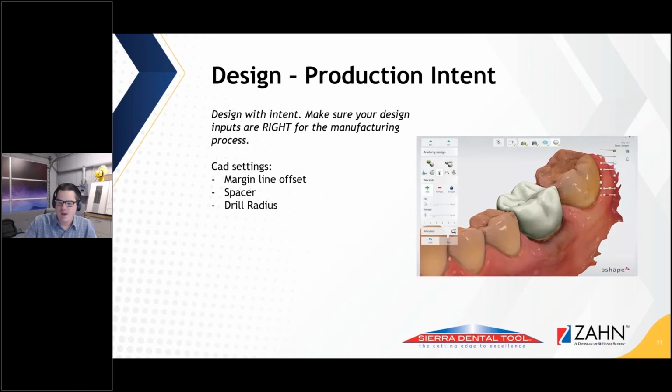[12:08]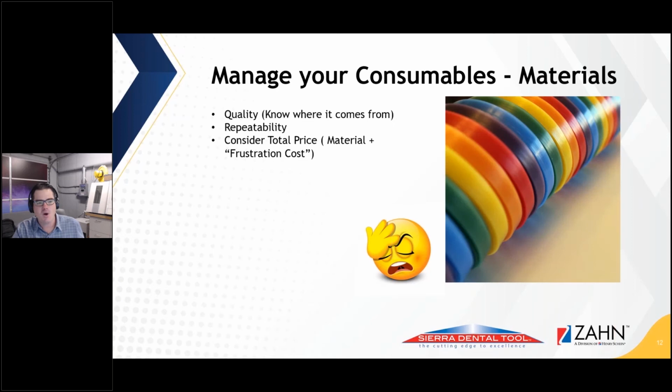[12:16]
Cool. So I am going to run through these pretty quick because I've still got 87 slides left in 10 minutes. Okay.
Now let's talk about what we're doing on the consumable side. So we've checked the box of machine, software, all that's dialed and perfect. When you look at all this from a business case scenario perspective, the biggest dollar savings or dollar efficiencies for digital production are in the consumables. And so you really want to make sure that one, you're using a good consumable, and two, you're using that consumable to its highest potential.
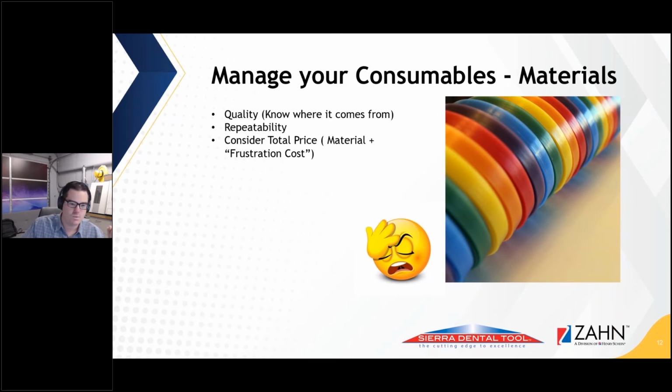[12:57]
And so I'll dial in on materials and tooling. A lot of this crosses over to 3D printing too, in case you're looking at that, but we happen to be a tooling company, so I'm kind of biased towards subtractive manufacturing. Okay, so on materials, quality, guys, like the Zirconia is crazy.
There are so many variations of Zirconia out there now. Back 10 years ago, there was only a handful, but as markets grow, more people come in, and I would say half the Zirconia out there, well, I'm not going to go that high, but a good chunk of the Zirconia out there is questionable as far as where it comes from. And, is it really FDA cleared? Have you done your homework to make sure that it is? There's even been some articles around some of the powders being radioactive. There's some scary stuff out there, and you really need to know about the quality of your material.
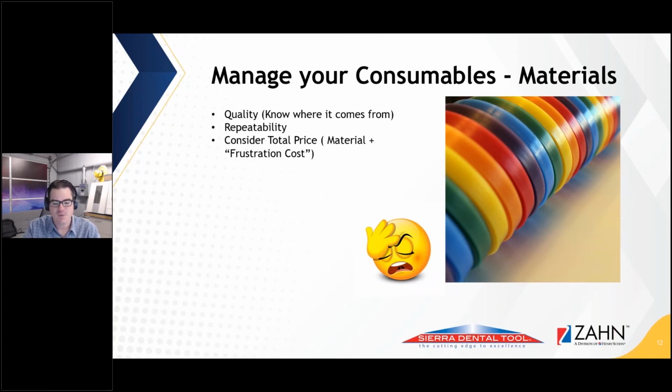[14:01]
And work with a reputable supplier for that. Getting material from a guy who's bought a pallet of it from China and he's selling out of his garage, yeah, you're going to save a couple bucks. But what happens when your remake level spikes 3 years from now because you put out 500 crowns or 1,000 crowns in this crappy material? Definitely consider the risks when it comes to material, and really, it's better to spend a little bit more and make sure it's reliable. So that said, you're just going to reduce
your overall frustration level. I know I've worked in labs. I know how it is, and most labs that I've walked into or talked to, there's always a good degree of that hair on fire factor. Like, oh crap, we got a breakage. Oh crap, we got a rush case. There's a lot of that going on. And so if you cover the basics of good materials and good inputs, machines, software, tools, everything, you don't have to worry about that. You can deal with your clients and focus on doing better with your business.
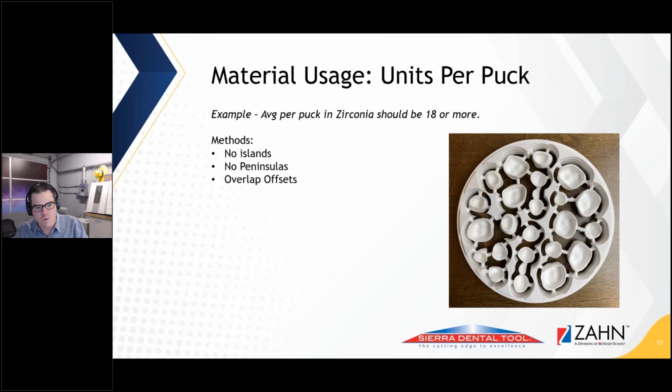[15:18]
Okay, so one other thing on materials, I've got a couple of quick tips that'll make a difference to your bottom line no matter what. You should always be getting at least 18 units in a standard 98 millimeter disc. And if you don't know how many units you're getting, track it. It's easy to write it down, like on a yellow pad. Write it down, hash marks, track it. If you're not getting 18, you're not making good use of the material. And how do you get 18?
These 3 points here. When you're nesting, do not create islands. Don't create little areas of material that you can't use. Also, do not create peninsulas. Think about the state of Florida. If you have the state of Florida in your puck, you can't put a unit in the end of that peninsula because there's nothing to attach it to.
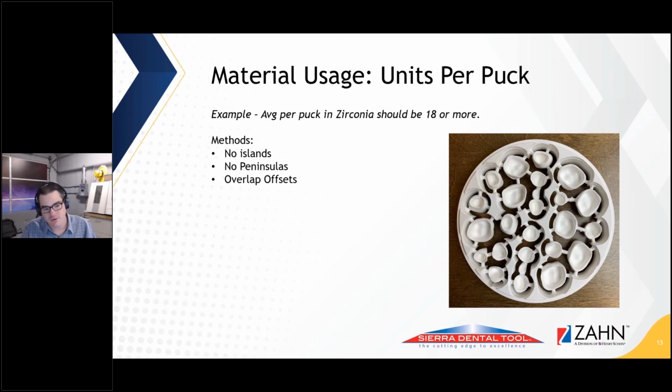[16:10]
And then thirdly is, no matter what CAM system you're working with, the majority, I would say all of them, have the option to overlap the space around the unit. So you can either set a unit down in its own little pocket, and then the next one next to it, and keep walls in between all of them, or you can bring them all together and overlap that. The difference in your material yield is like 15 or 20% if you overlap the offsets. It's massive. And that scaled across thousands of units in a year is way bigger when you look at it from a dollar point. So let's use the material better.
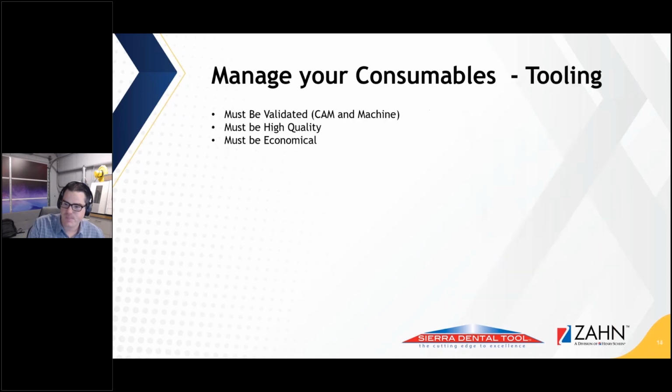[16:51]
Tooling. So that's actually where our biggest expertise is, but I find that people usually care about, okay, how can I make better money with the lab? That's really what the question is at the end of the day. And Sierra is really an interesting company because we got our start because we wanted to address that exact simple concern. Back in 2008 when Sierra was founded and we partnered with Zahn, the status quo was bad in the tooling space.
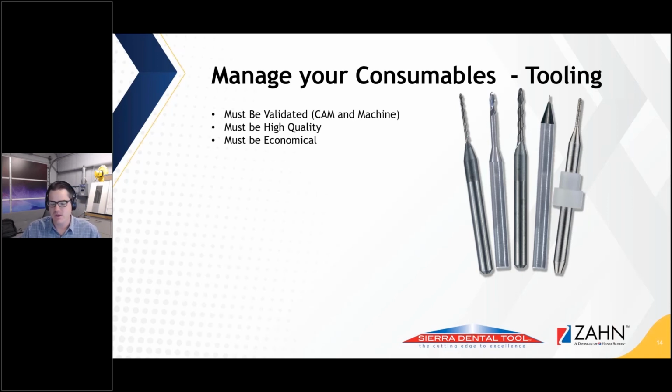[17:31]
I mean, you had company or systems like the old lava form, the big giant industrial freezer looking machine. You spend $250,000 on the machine, and then they were charging $50-$60 for a burr.
Sierra really cut its teeth, no pun intended, on that system, because we came in with our aerospace technology. And yes, the tool costs more, but we 10x'd, or in some cases 15x'd, the yield of the tool. That has the effect of taking your cost per unit of production through the floor. We were going from like 50-60 cents in tooling per crown to like 7 cents.
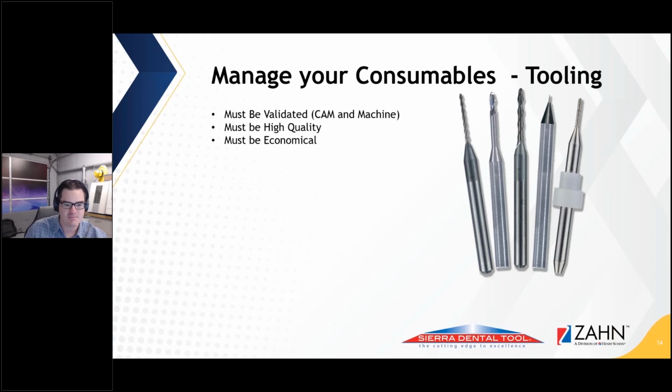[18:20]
And that, plus the partnership and marketing and support horsepower that Zahn has, is the reason why we're the premier tooling supplier in the market now. So when you look at a tool, and obviously I'm biased, so I know that Sierra checks all these points, but hey, there are other options.
The biggest thing that you want to look at is, does the tool work with the machine and the CAM? It's got to be validated, and you have to question who did the validation, how did they do the validation. Just hearing the word validate is like, whatever. You've got to make sure that somebody actually tested it in real life and that it works. Because there are nightmare stories that I can't really get into detail on, but there have been tools from our competitors that went out there, just didn't work, and caused a huge amount of issues.
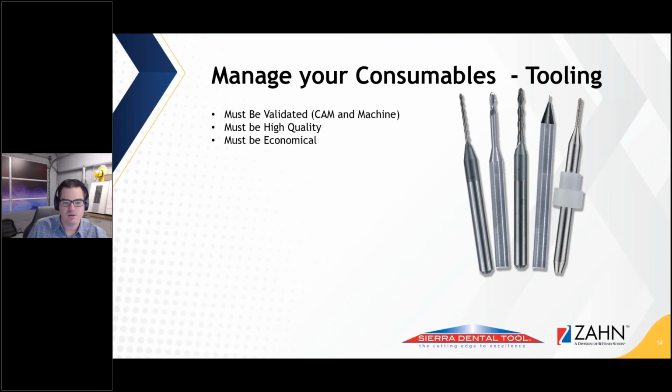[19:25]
And then you want to look at, okay, is it quality? If you get one tool for X price, is it going to be as good as the next tool and the next tool and the 100th tool? Do you have consistency? Can you rely on it being repeatable? And then you have to look at the economics. It's not just about what the tool costs up front. It's about your cost per unit. What does it cost you to make a crown with that tool? So I'm pretty confident that if you analyze those questions and think about it in detail, you fall on Sierra, because we're designed to hit those 3 points.
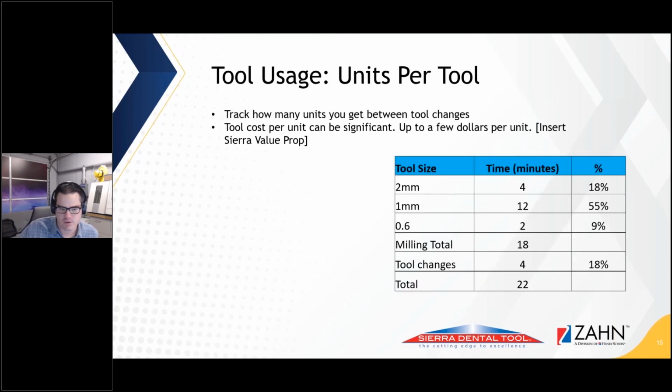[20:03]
No matter whose tool you're using, you need to be tracking what your usage is, because if you don't track it, you can't answer any of those questions on the prior slide. So how do you track units? Yellow pad. Just make hash marks. I put the tool in on this date, and it did this, and this. Very, very simple. You can get fancy with Excel spreadsheets or whatever, but literally, a yellow pad or a sticky note on the side of the machine. Just at the end of the day, know how many units you did before the tool wore out.
Also be aware of the fact that tools wear at different rates depending on what tool they are. So for instance, this table here is a Roland with Millbox single molar crown. The 2 millimeter runs for 4 minutes, the 1 runs for 12, and the 0.6 runs for 2. So this is going to tell you that you're going to replace that 1 millimeter a lot faster than the other ones. You want to know how to get into that scientifically? Reach out to me, and I'm happy to help.
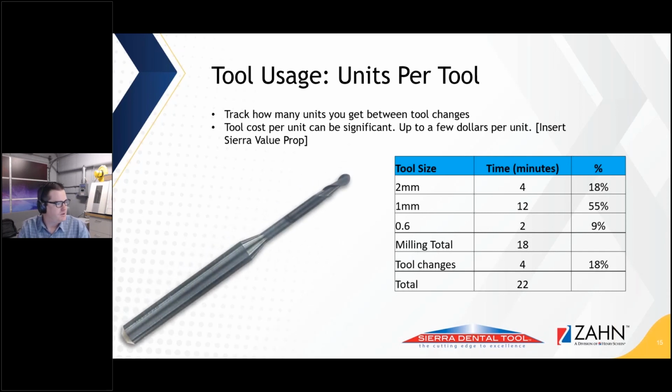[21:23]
Okay. Oh, hey, I got a cool little icon in here. So if I'm going to leave 5 minutes for questions, I need to run through the last couple of these slides here.
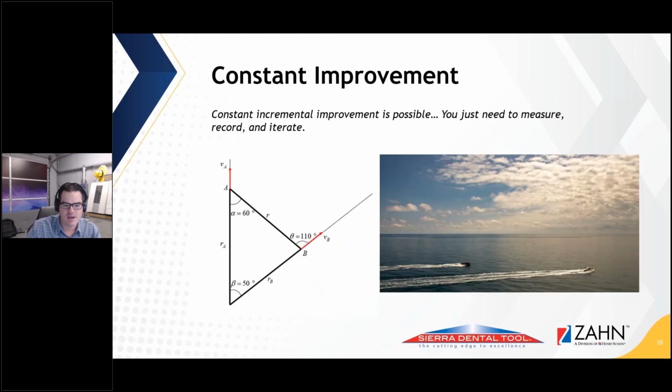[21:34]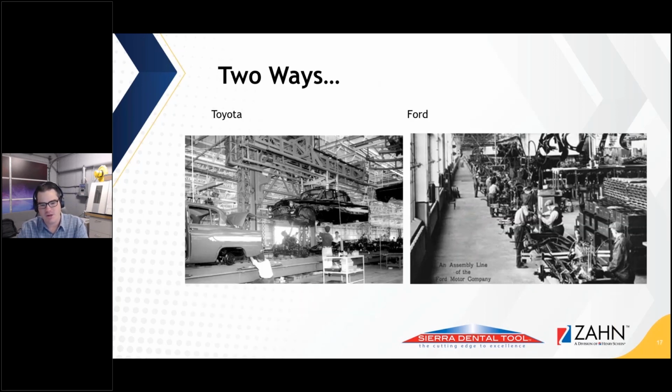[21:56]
A little note on constant improvement. I like this metaphor of 2 boats on the ocean, and if they have 0.2 of a degree of separation over time, those tiny little incremental changes add up to massive changes. Back to mindset.
Another one on mindset. If you're unfamiliar with lean manufacturing, man, just Google it. Read the Wikipedia on it. Look at how Ford did it. Look at how Toyota did it. Look at how other modern production industries do it. And there is a lot to learn from that and apply to the lab.
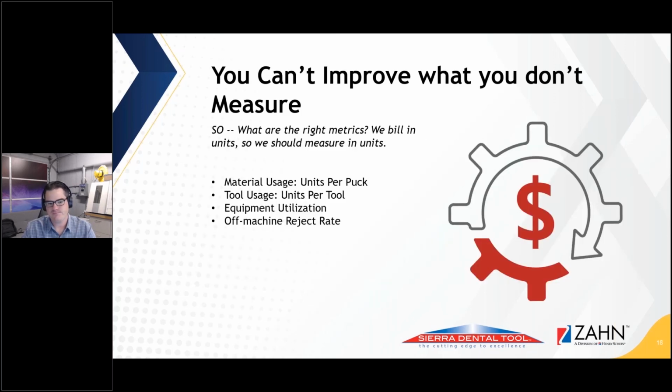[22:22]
If you don't measure it, you cannot improve it. I think that's a good theme on this slide. I like to measure things. If you don't know what you're getting out of a tool, you don't know if you can improve what you're getting out of the tool.
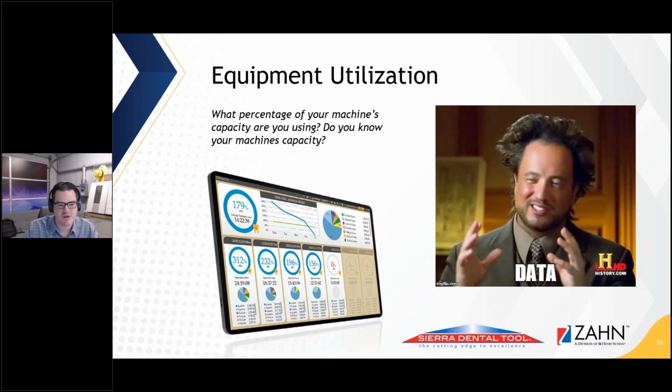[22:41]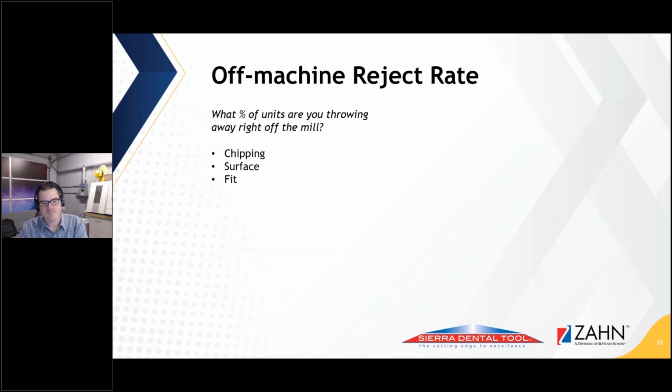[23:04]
Couple of details on that. Are you using the machine to its capacity? Like a machine running in 8 hours, how many units can it do? What percentage of that capacity are you using in your lab? Does it make sense to get another machine, or should you maybe focus on getting the one you have to work more efficiently? A lot of questions there.
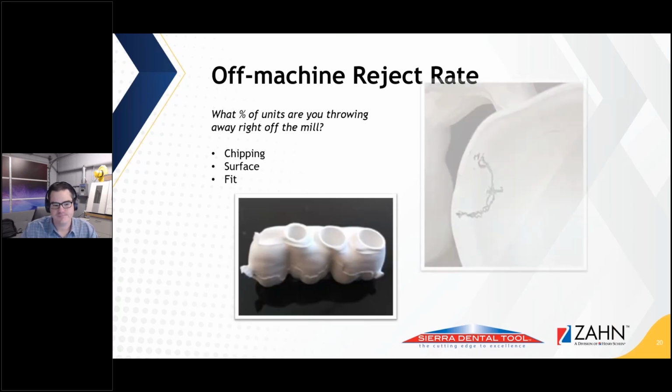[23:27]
Track your off-machine reject rate. What I mean by that is how many units are you throwing in the trash because of chipping, surface, fit, things that happen maybe in the machining process that could be related to machine, calibration, CAM, worn tool, many things. But if you're not tracking that, you can't troubleshoot it, and it's money going out the door. Examples of stuff that you'll reject a crown for.
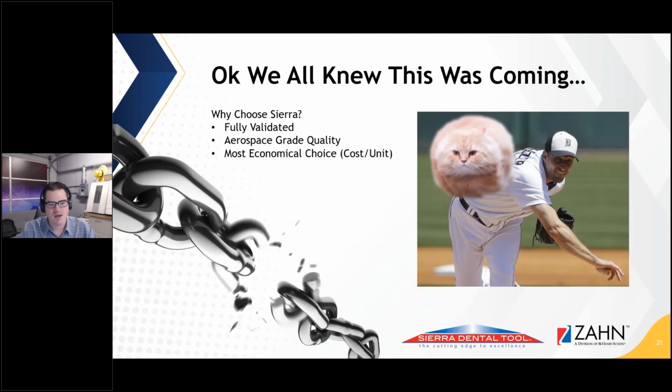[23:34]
Okay. I'm going to run through the little pitch that we do on Sierra. These are the last couple of slides, and then I'll tie it up for questions. So again, we're the most validated tool out there. You can't argue with it. Everything we do is at an aerospace level, from our designs, our materials, our coatings. Everything is at the grade that a company like Boeing or SpaceX would demand. And our offering is the most cost efficient from a per unit standpoint.
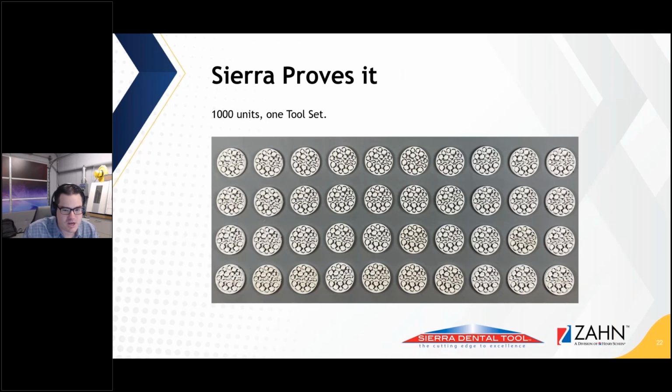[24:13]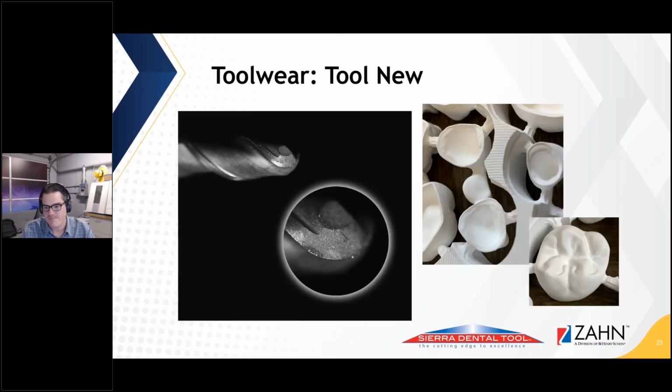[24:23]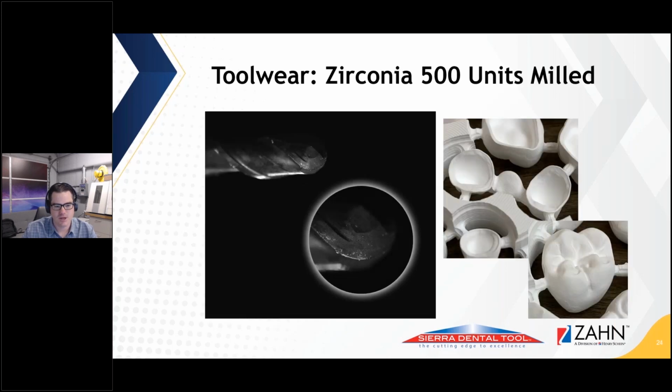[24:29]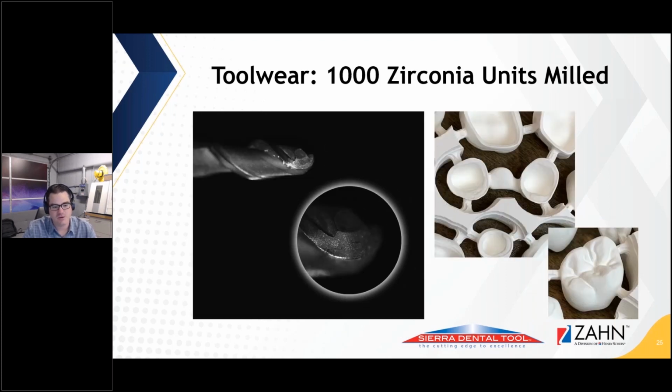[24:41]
And when we talk about validation, we mean it. We literally sit down and machine 100 or 200 or 1,000 crowns just to document the wear and know exactly what the tool does in that scenario. And so we can look at what the tool wear looks like. I'll point your attention to the edge of the tool. After 500 units, it starts to erode just a little bit. And then after 1,000 units, you have a little bit more erosion there. Really the point of this one was, let's guarantee that we can do 1,000. But we have so many anecdotes of labs doing well over 1,000, close to 3,000. So it's all about the implementation and how you do it.
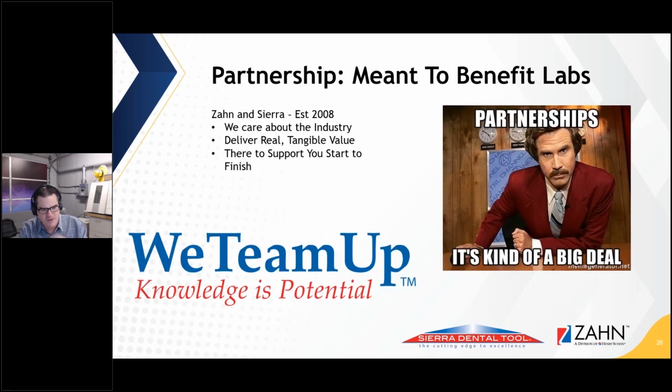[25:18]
I make this metaphor quite a bit, that tools are basically like tires on your car. If you go easy on them, you can get so many more miles on them than if you're doing burnouts in the parking lot. So with that, I think this is my second to last slide here. I hope that it's obvious that Sierra and Zahn together are really here to support the industry. We want to deliver real value that actually helps the lab. It's not just about selling a widget and walking away. And you know what? We're here to support it, start to finish.
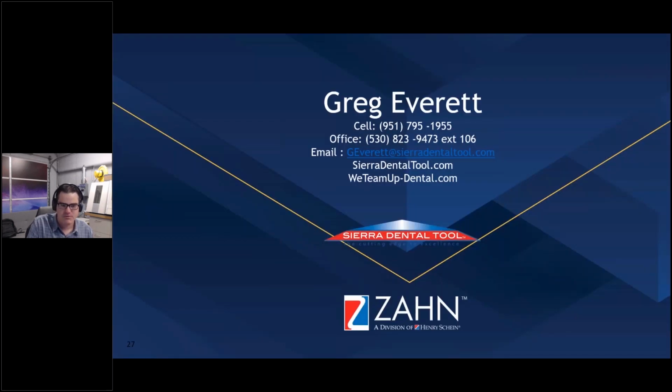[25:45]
So I'll jump into the last slide, which if anybody watching this wants to reach out to Sierra to talk about maybe some process improvements or anything that may be indirectly related to tooling, we're always happy to chat about it. I kind of pride myself in thinking about the fact that Sierra is not just a tooling company. We're more of a solutions company that happens to make tooling. So I went over by 2 minutes, but I'll give it back to Fran and see if we have any questions, and we'll jump from there.
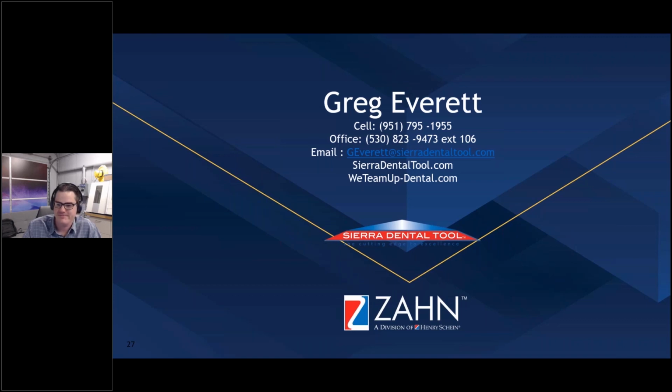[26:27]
So Fran. Thanks, Greg. We did have one question, but I think you answered it, so maybe you want to reiterate a little. Sure. The question was, do you have an average number for units per tool?
Yeah. So it's really dependent on the machine itself and the material, because that varies. In fact, before we got this conversation started, we were talking about that. If you have a denser zirconia, it wears the tools faster. And if you're not updating your software and making sure your machine's upkept, you can also affect tool wear. But all that in, if you're machining a common zirconia, maybe like a Zirlux zirconia, and you're using our tool in a Roland with Millbox, you can easily do 1,200 to 1,500 units with a tool set.
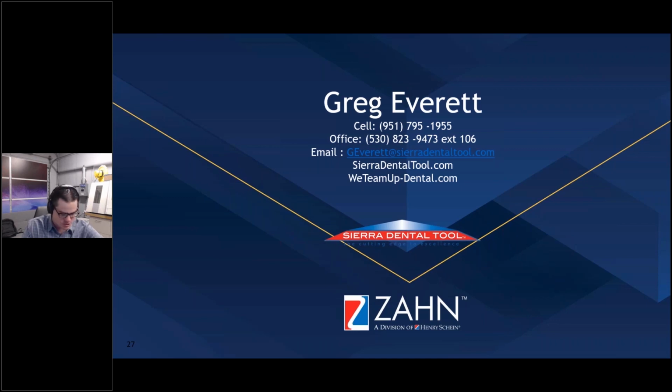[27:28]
And the way that usually breaks down is the 1 millimeter drops out around 1,200 units. The 2 millimeter will go closer to 2,000, and the 0.6 will likely end up around where that 2 millimeter is too, because it's a smaller tool and has to work a little harder to do what it's doing. So if anybody has any specific questions, and we can talk about, all right, I need to know what machine, what material, what CAM, I can give you a way better, more precise answer. But yeah, we advertise 1,000 units, but it's a core principle that we want to under promise and over deliver. And really that's what we're built on, and I probably need to get that word out a little more. It's somewhat dependent on your setup, but we'll definitely hit the advertised rates.